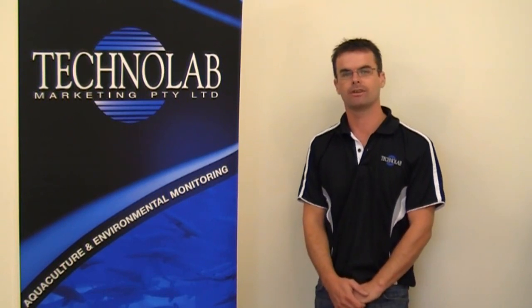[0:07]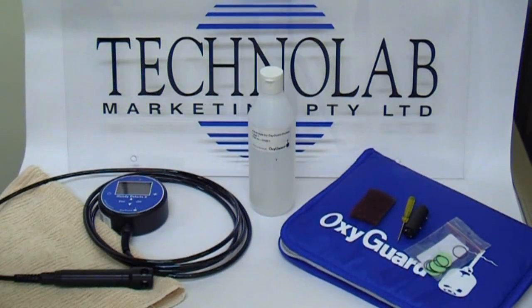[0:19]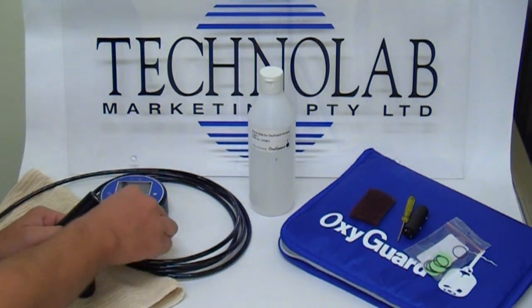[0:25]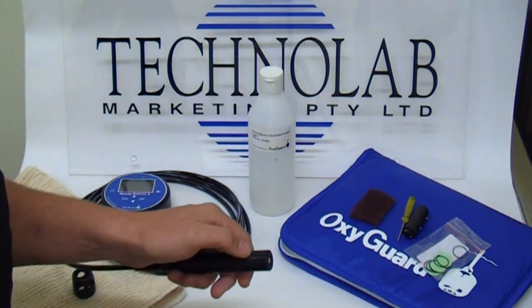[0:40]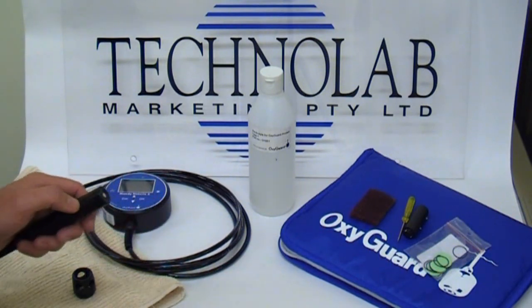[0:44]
Servicing a portable dissolved oxygen sensor. Basically, we change a membrane when the reading is fluctuating or taking time to stabilise, and/or giving the incorrect reading, or when the membrane is physically damaged. Other than that, there's really no routine maintenance that needs to be done on the probe, and the membrane isn't changed just for the sake of changing. So we only change them when they are giving an erroneous reading.
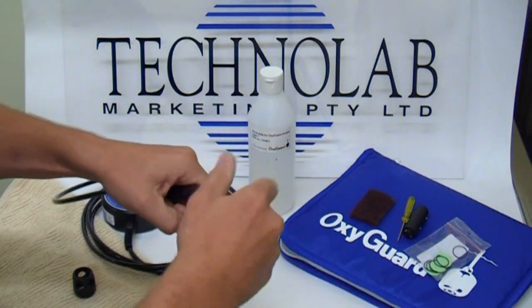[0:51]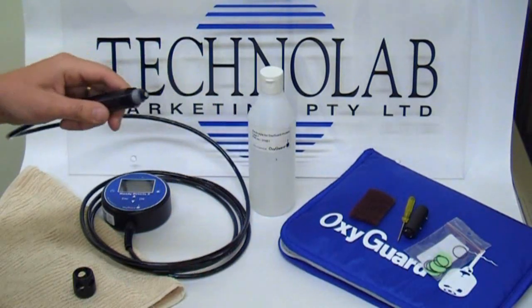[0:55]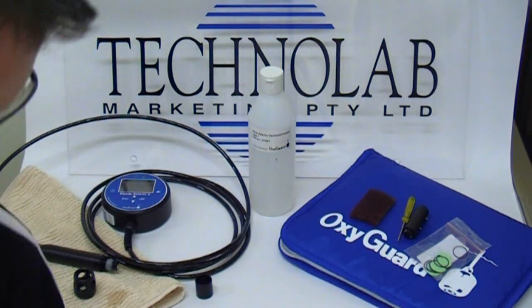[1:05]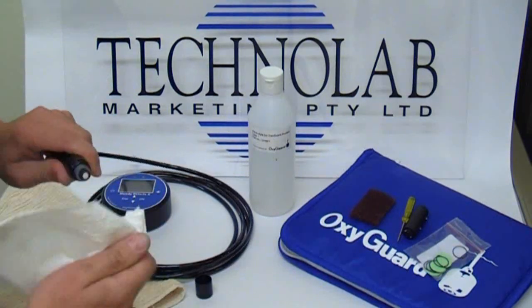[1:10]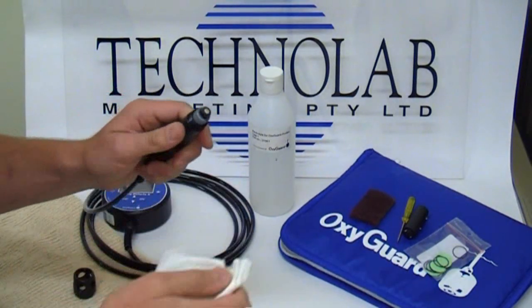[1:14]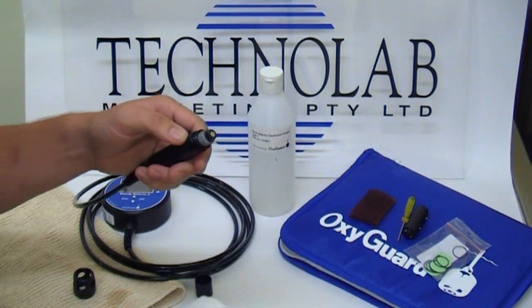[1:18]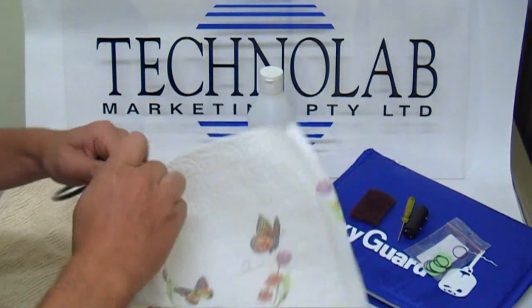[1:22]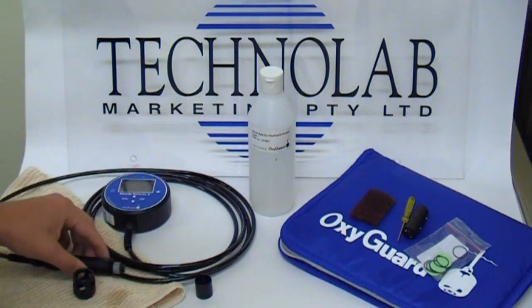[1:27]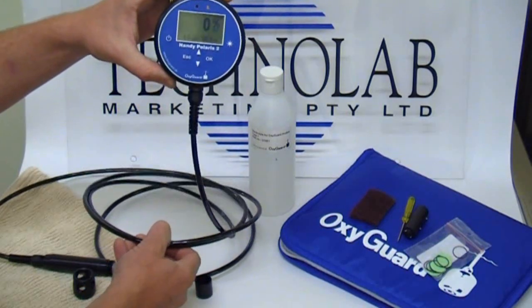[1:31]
To service a probe, remove the cap. There's a small amount of electrolyte inside. We'll just dispose of the electrolyte. The next important thing, and it is actually the most important aspect of this dissolved oxygen sensor: being a galvanic cell, it has an anode and a cathode on the end, and without any electrolyte there's no voltage output from the probe whatsoever. So the meter, when the probe is clean and dry, should be reading zero, basically zero output from the probe.
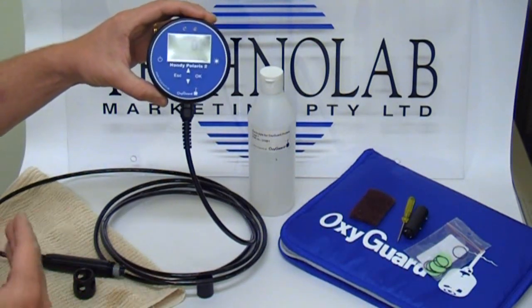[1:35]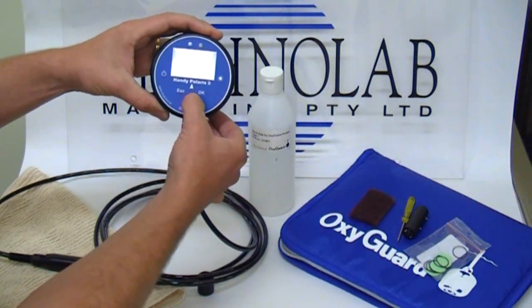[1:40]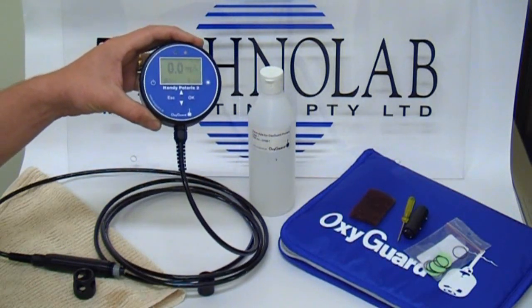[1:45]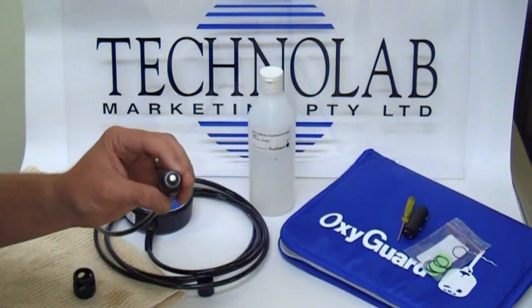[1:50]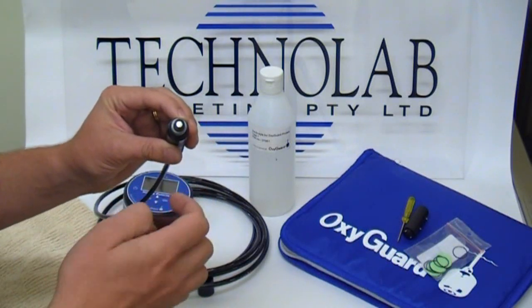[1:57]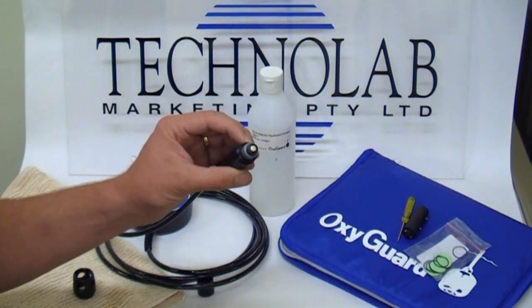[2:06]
If you're finding that there's a background reading of, say, 0.1 or 0.2 milligrams per litre, this probe should really read zero. So what we do is give the probe a bit of a clean. Over time, as oxygen molecules move through the membrane, they coat the anode and push the membrane further and further away from the actual anode. In doing so, it slows the response time of the probe down. It doesn't make it drift or give an erroneous reading. It just takes longer to stabilize.
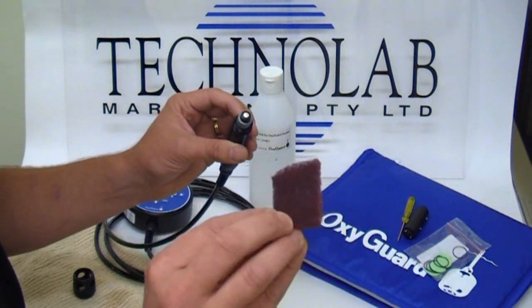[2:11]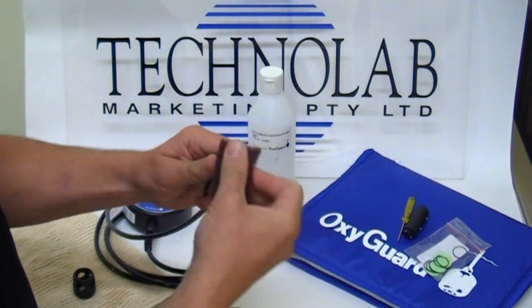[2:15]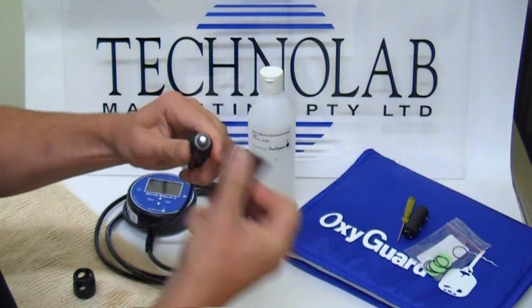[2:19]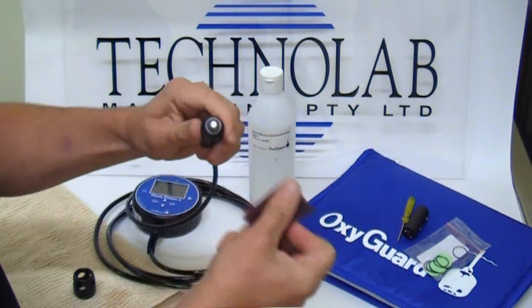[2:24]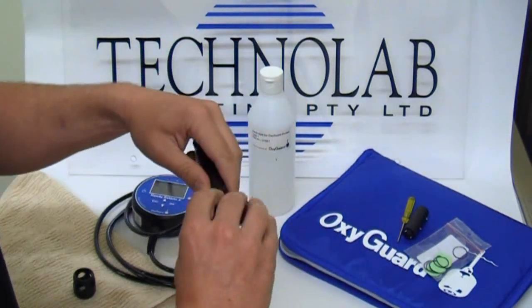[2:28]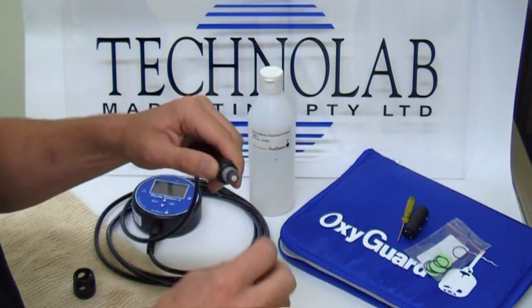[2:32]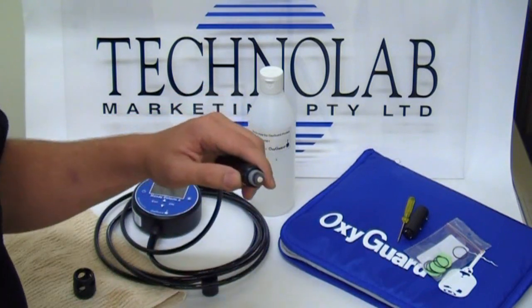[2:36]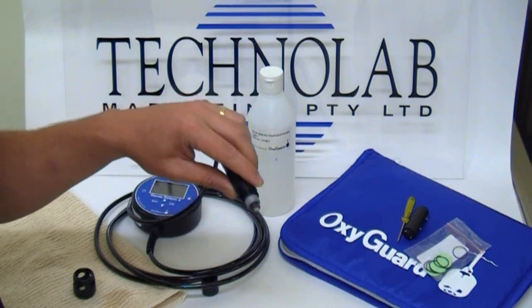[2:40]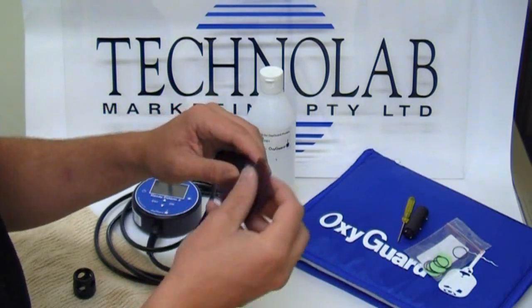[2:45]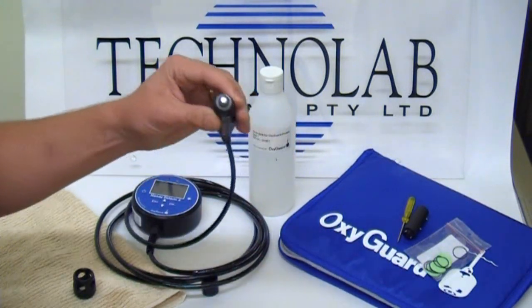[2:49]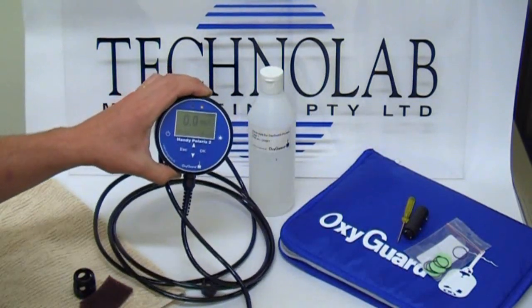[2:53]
So a scouring pad is the most important thing. It comes as part of our kit. It's important to give the end of the probe a scour, and I rotate the probe as I'm doing it so I don't leave score marks, really trying to make the cathode nice and bright. This can also be used to remove any white powdery deposits around the probe, which are the salts that dry out of the electrolyte. If it gets quite stubborn, you can dip the pad into a little bit of fresh water and give it a clean with a scouring brush. So the probe's nice and dry and clean and bright, the meter reads zero, and now we're ready to change the membrane.
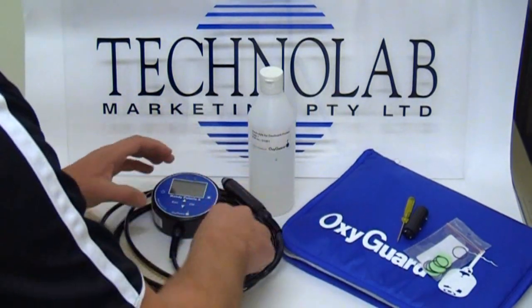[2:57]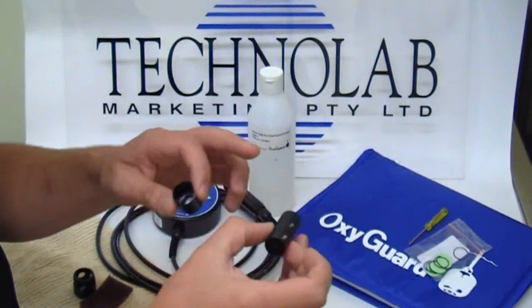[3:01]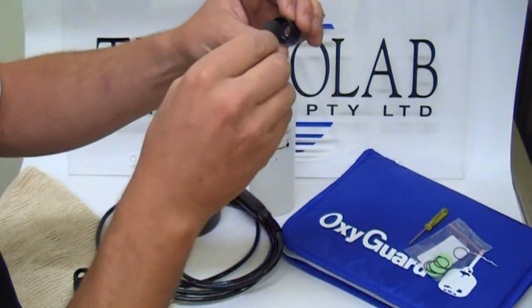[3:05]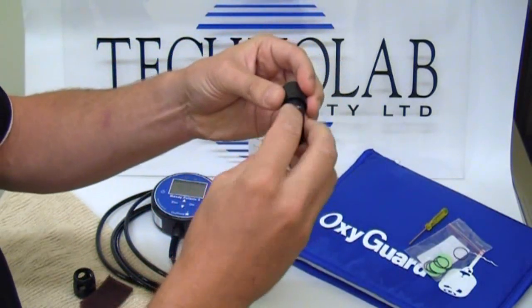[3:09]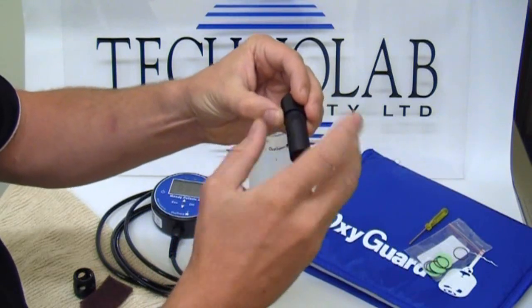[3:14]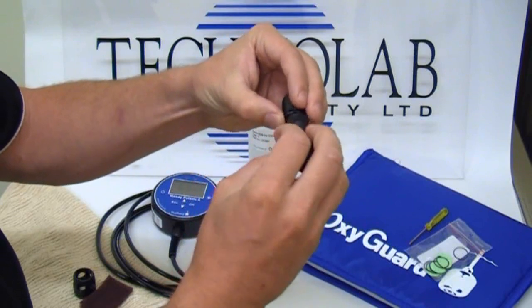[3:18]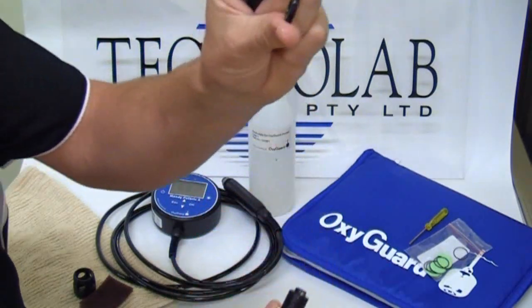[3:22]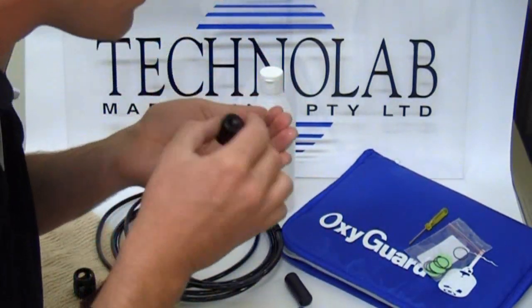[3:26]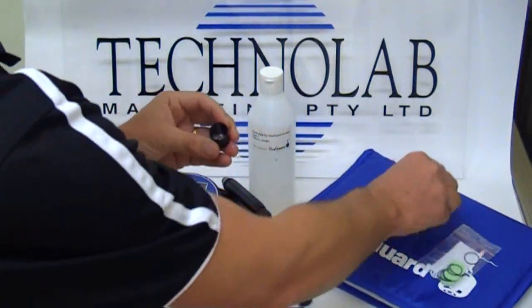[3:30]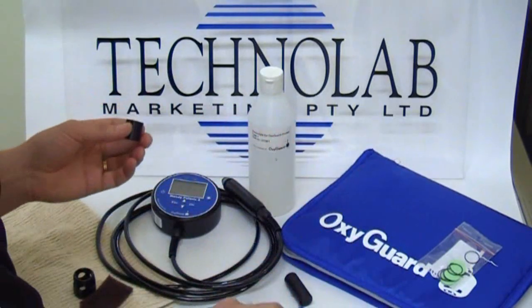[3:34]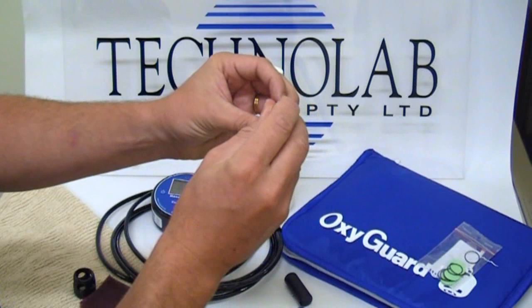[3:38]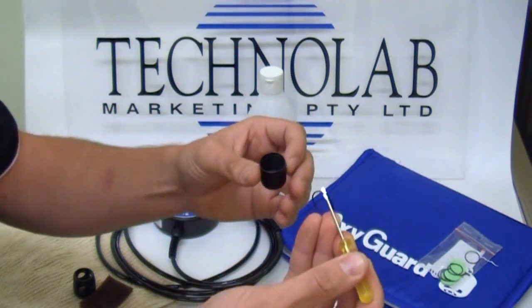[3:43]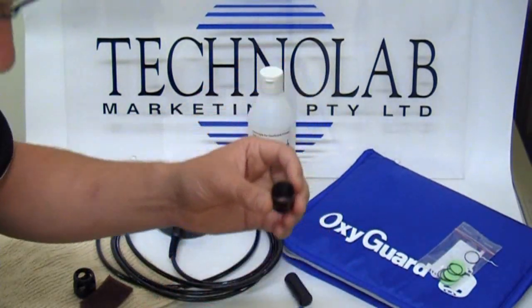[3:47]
To change a membrane, we have the universal tool, which not only opens the back of the meter, but also takes the template that is holding the membrane in place. It's a matter of rotating this quite a few times, about 30 times, to take the template out of the cap. I just gently blow, or a little screwdriver can pop out just the membrane alone. More importantly, there's an O-ring sitting down on the inside of this cap. Use something sharp, a fingernail, or just loosely grab it with a small screwdriver to remove the O-ring. The O-ring and the membrane should be changed at the same time.
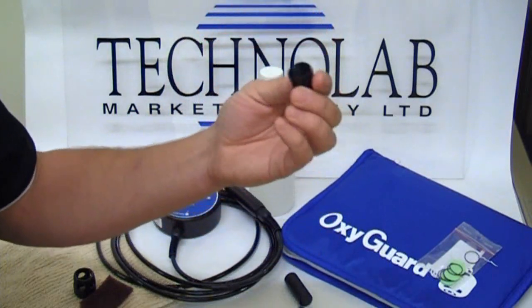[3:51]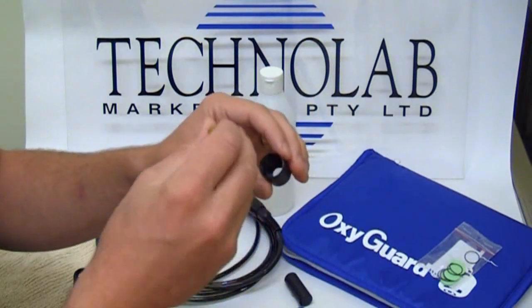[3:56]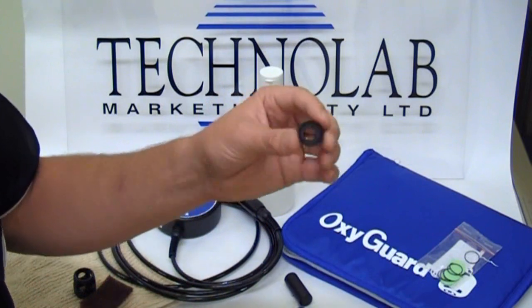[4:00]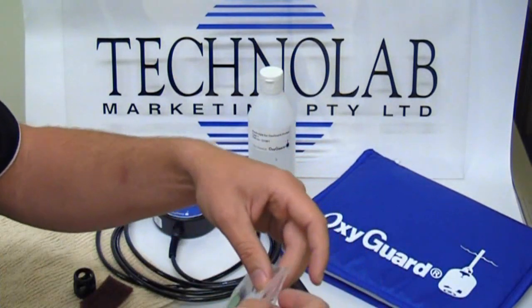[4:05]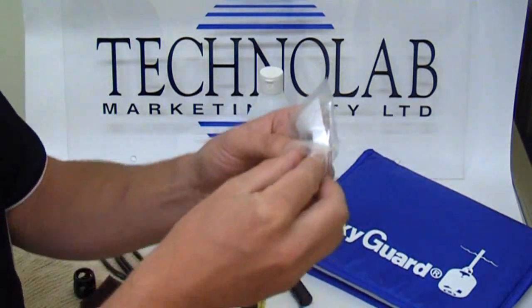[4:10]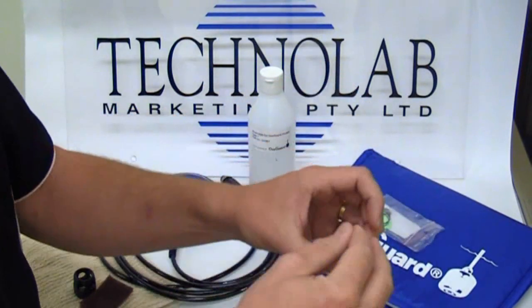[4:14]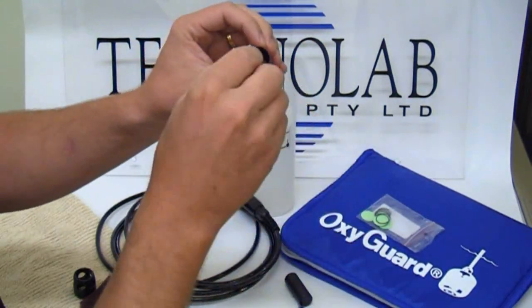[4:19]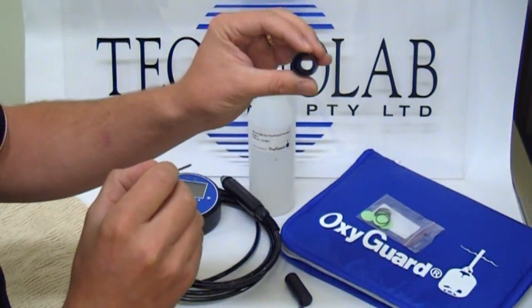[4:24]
The cap can then be rinsed, washed and cleaned, and any dried white powdery crystals can be dissolved away. To put the membrane in, we have a pack of 10 membranes and O-rings. First thing to do is grab an O-ring. O-ring always in first. The O-ring goes towards the bottom. Once again, it's handy having something to poke the O-ring into place at the bottom.
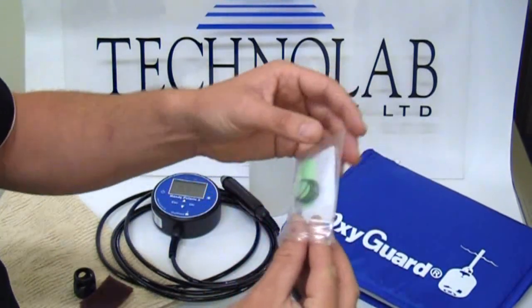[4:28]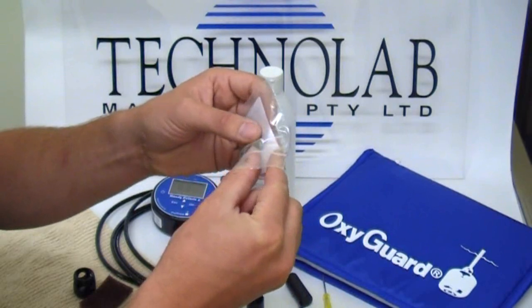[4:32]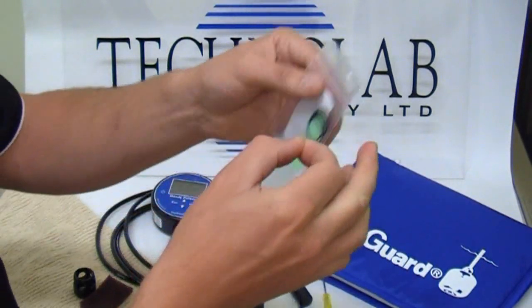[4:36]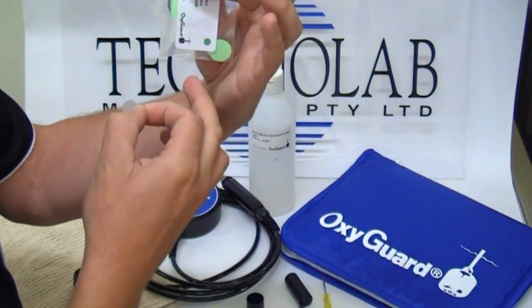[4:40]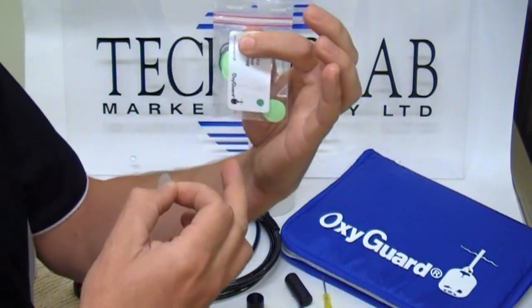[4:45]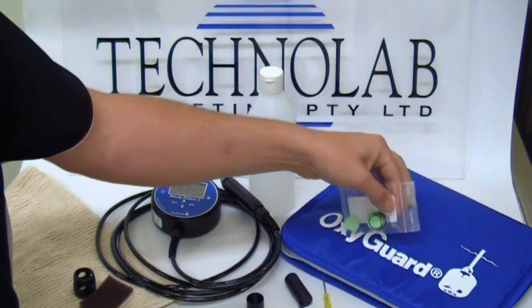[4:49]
The membrane can be handled, but I try not to grab it with glue. We want to keep it in good nick. OxyGuard use separators between the clear membranes. I have had a few meters back with a green membrane and wondering why it doesn't work. They're actually a paper separator between the membranes, so they don't work too well.
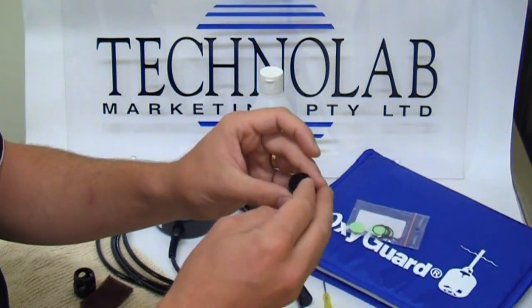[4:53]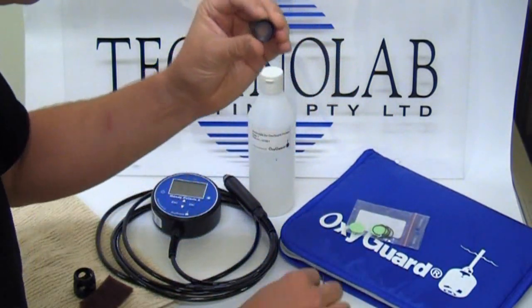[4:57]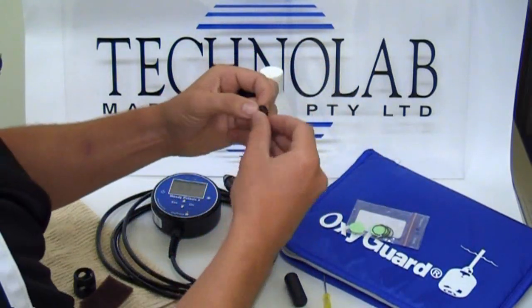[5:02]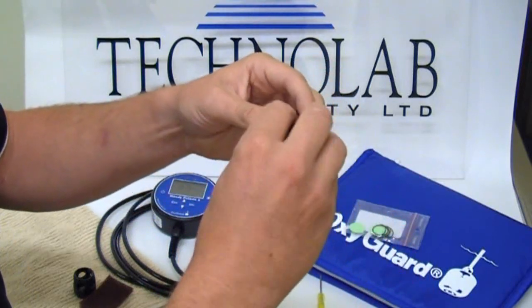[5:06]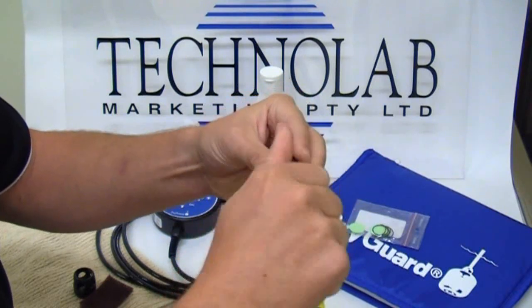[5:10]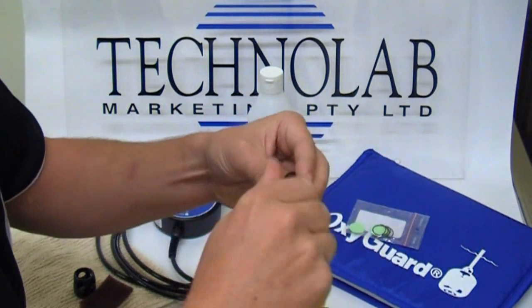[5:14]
We drop the membrane roughly into place. The most important thing is you don't have to worry too much about where it's placed, just as long as it's down towards the bottom. We take the template, I normally put it onto the key. Don't worry about where the membrane's placed, and we screw about 2/3 of the way down. So it's a fair way down.
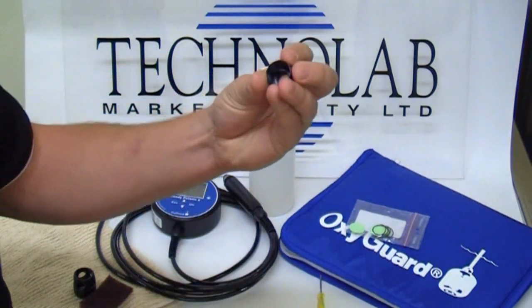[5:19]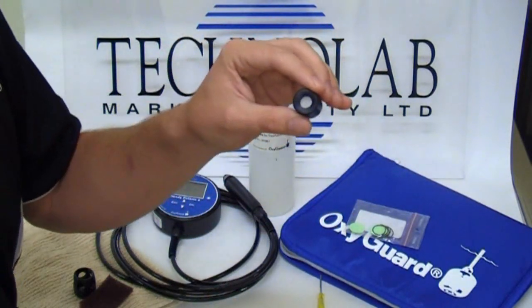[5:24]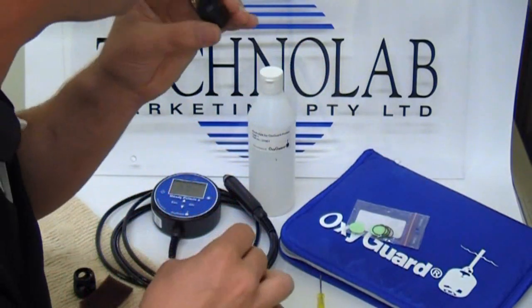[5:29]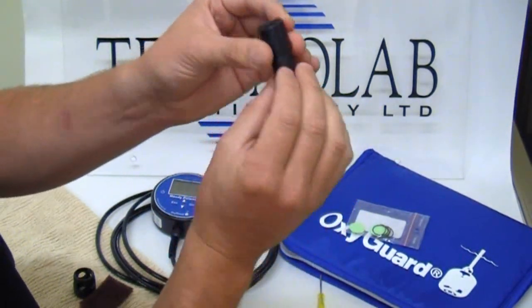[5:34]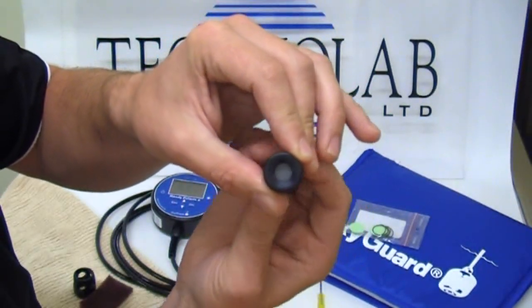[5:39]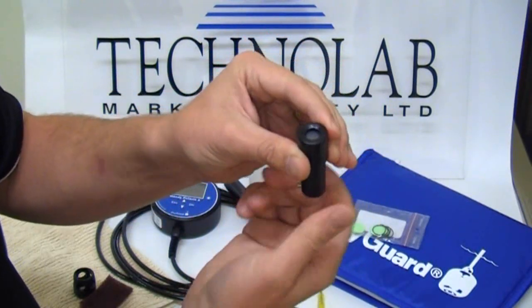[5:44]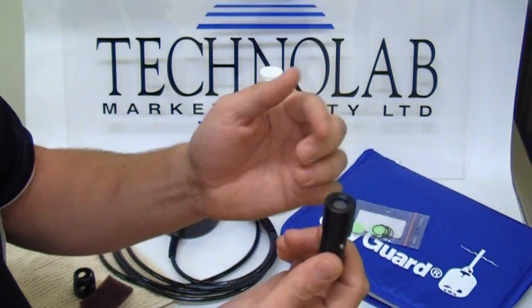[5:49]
Once it gets almost down to the bottom, we rotate the cap over, and this is the trick. We gently blow the membrane down onto the plate. In doing so, if you put the key back in and you start rotating, the membrane should actually be rotating on top of the template. What this is doing is self-centering the membrane. So now we just screw the template up till it feels home. And because the membrane is self-centered, it basically fits perfectly because they're machine cut.
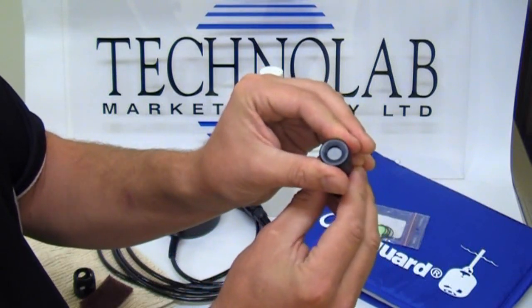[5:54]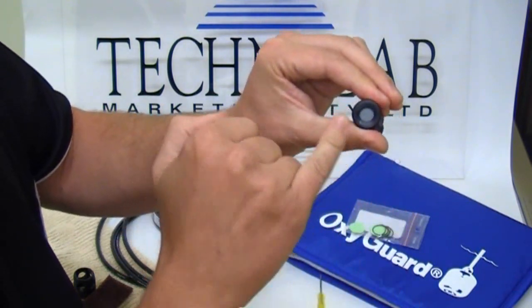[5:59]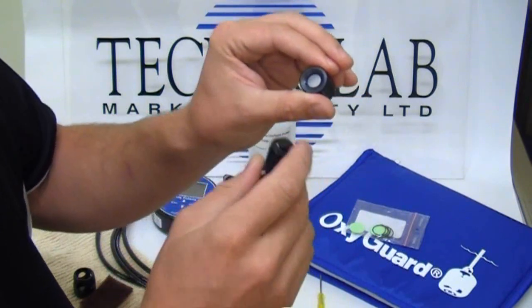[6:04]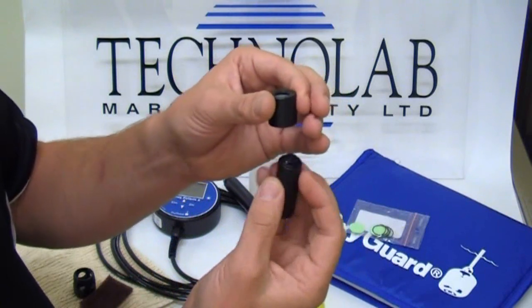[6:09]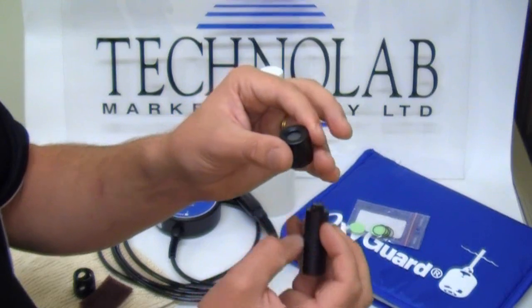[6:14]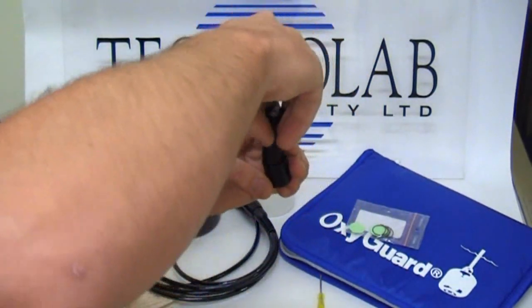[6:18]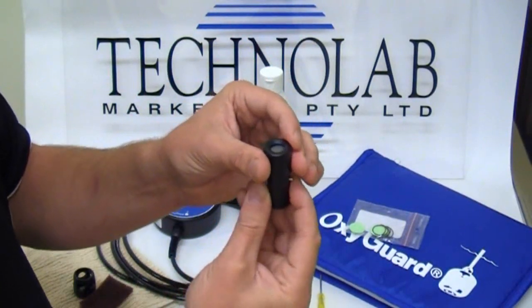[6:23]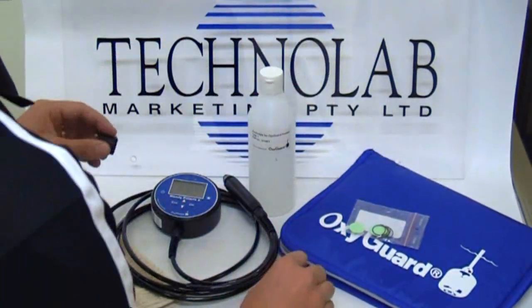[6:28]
Then you can put a fair bit of tension onto the cap, not overly tight, because we want a nice flat membrane, which this one is, and we don't want any wrinkles in it. The wrinkles are caused by the O-ring not being quite in the right place, or you haven't centered that membrane correctly. The problem is a lot of the time, trying to get the membrane towards the bottom and screwing down, you don't know where that membrane's sitting. So the best trick is to invert the membrane and screw up and watch the membrane rotate up to the top. And you get a nice clean membrane.
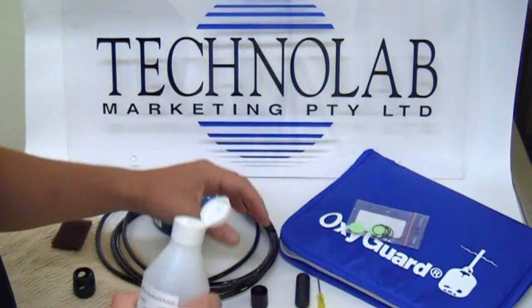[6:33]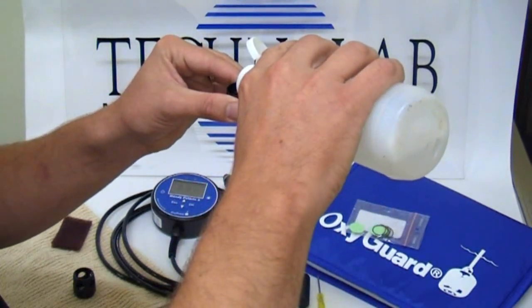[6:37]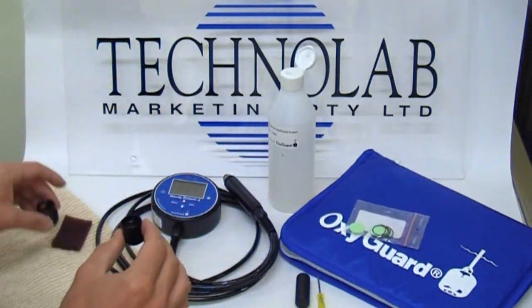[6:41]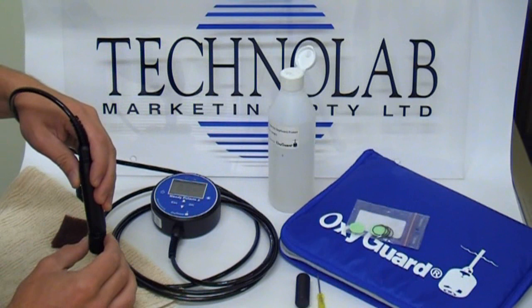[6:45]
The next step is some electrolyte. I generally fill this up 2/3 to 3/4 full. It's a little bit over full. Take the probe and a few turns. Flick the side of the meter just to get the air bubbles out. It does breathe quite easily and it will drip out the excess electrolyte, and you can screw that quite firm.
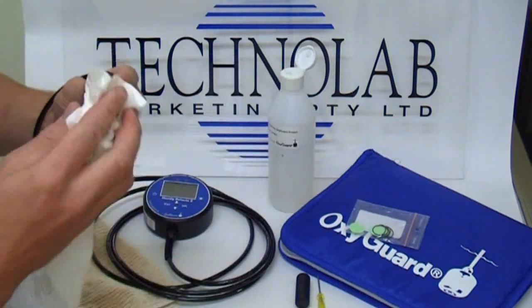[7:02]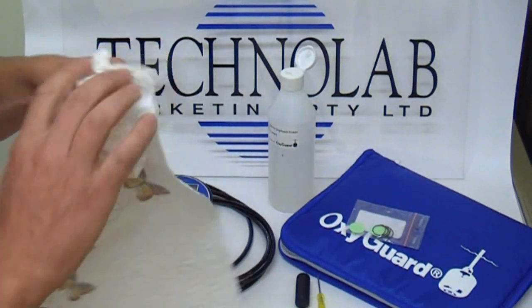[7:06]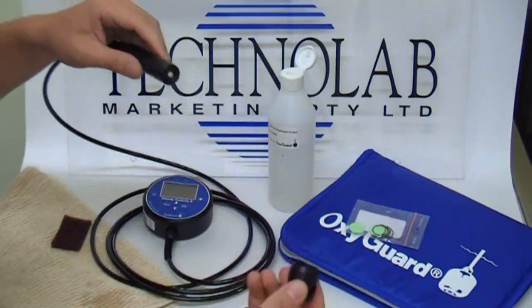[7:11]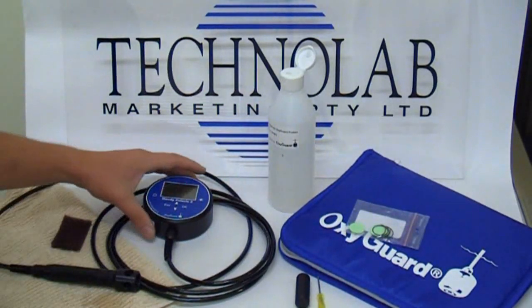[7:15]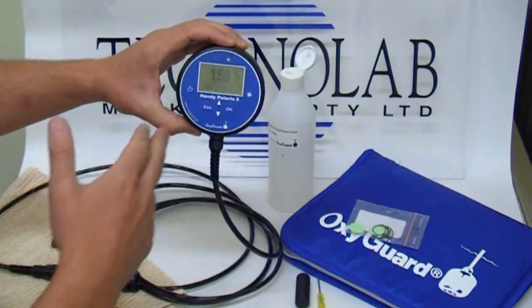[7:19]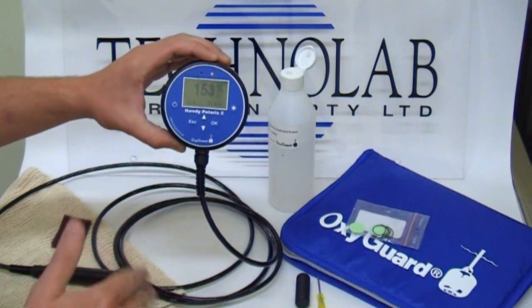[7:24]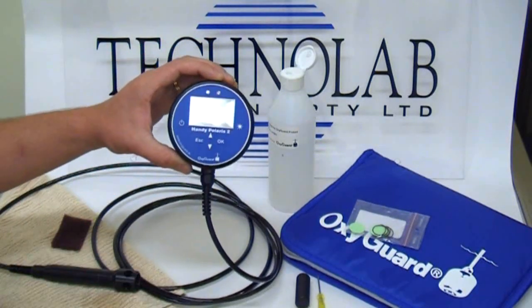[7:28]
The membrane is actually quite robust. We can dry the membrane and make sure that the probes are nice and tight. Membrane cap protector, and that's done. What you will notice is when you do change the membrane, the actual percent saturation, rather than being 100% with the membrane back on, spikes quite sharply. It may go up to 200, 250%.
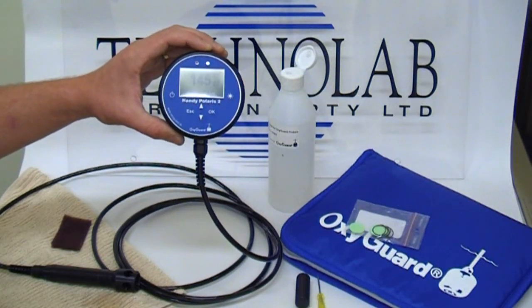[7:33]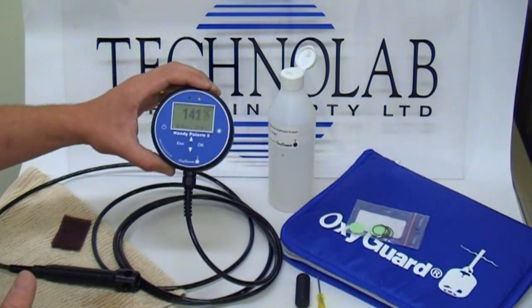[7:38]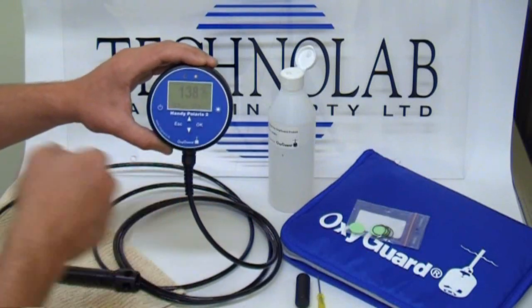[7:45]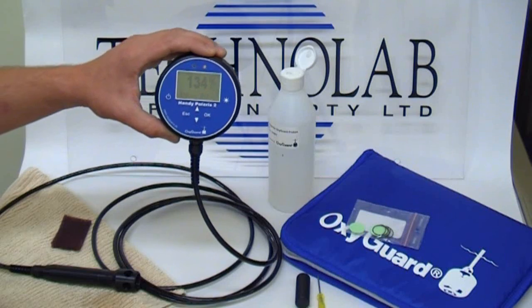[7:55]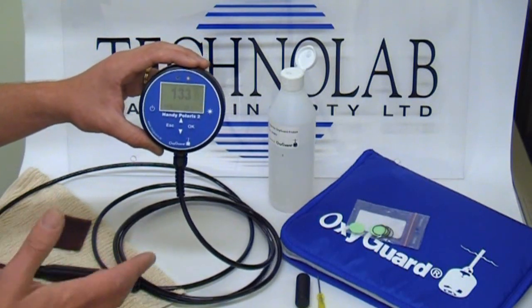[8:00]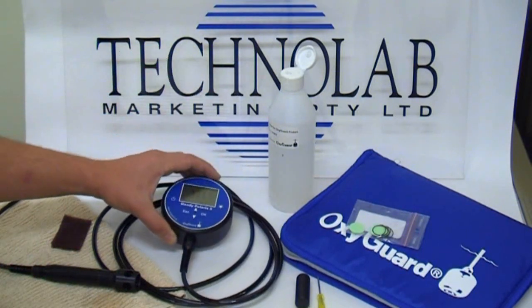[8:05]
What needs to happen now is we need to wait generally 10 minutes for the probe to equilibrate. Basically that means the probe comes to temperature with the electrolyte and there's balance. And you'll find the percent saturation is not varying at all. You'll see this slowly drifting down at the moment. Most importantly, the temperature is very stable, and it will just adapt to equilibrate with the air temperature and the electrolyte temperature. So now it's just a matter of waiting. We can't use the meter for this period because we haven't calibrated and it is settling out. So we'll come back to that in a moment and do a calibrate.
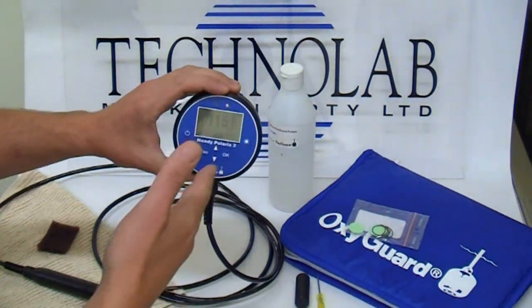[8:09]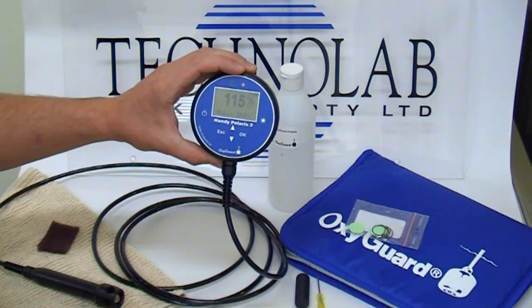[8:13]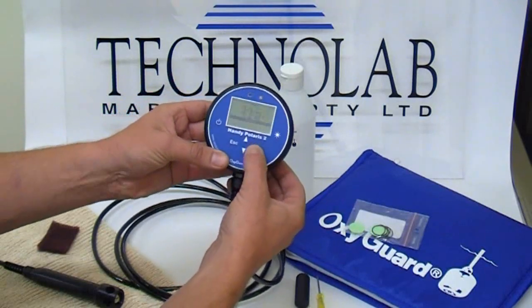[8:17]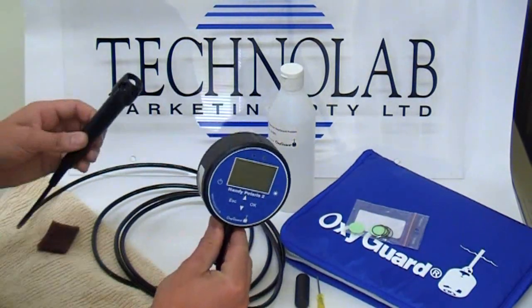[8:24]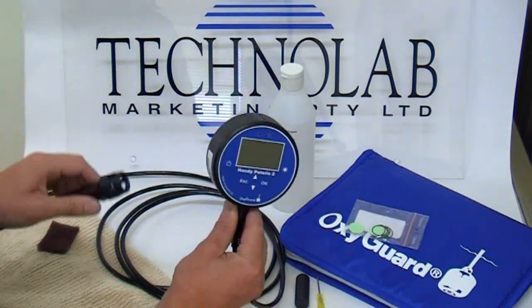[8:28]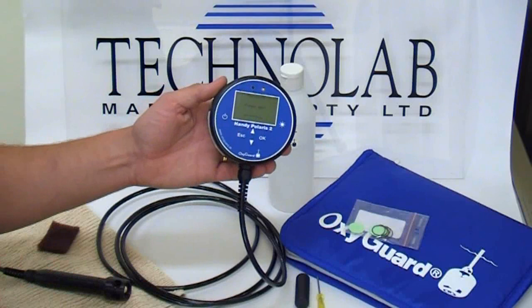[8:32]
Here we are about 10 minutes later. You notice that the meter's settled itself out at 115%. So to do a calibrate now, we simply go into the menu to calibrate, press OK. OxyGuard sensors are calibrated in air without any saturated air, just straight in air, and it assumes that our air is 100% saturated with oxygen and takes that as the 100%.
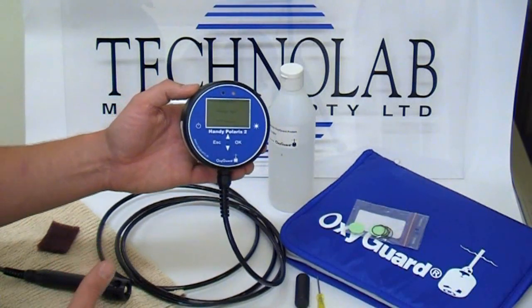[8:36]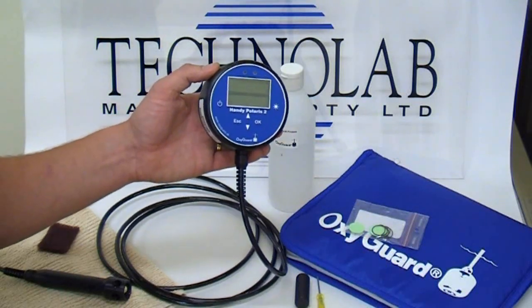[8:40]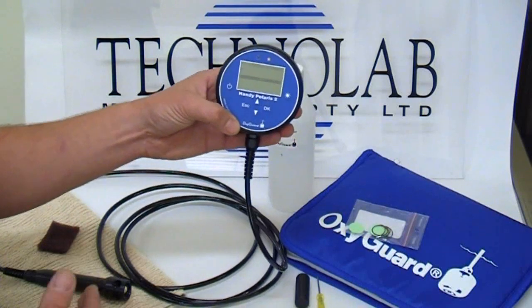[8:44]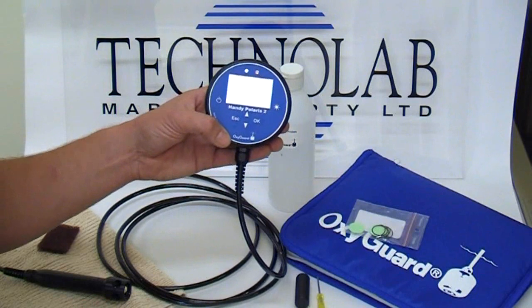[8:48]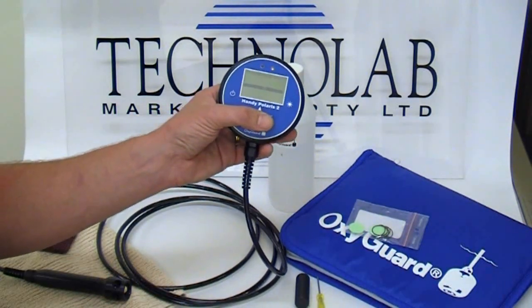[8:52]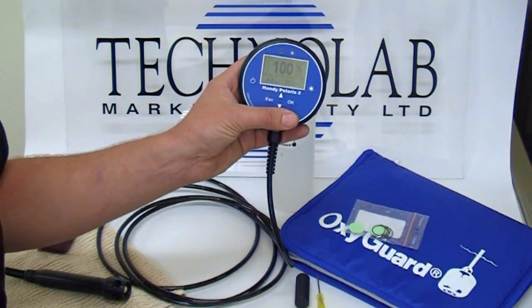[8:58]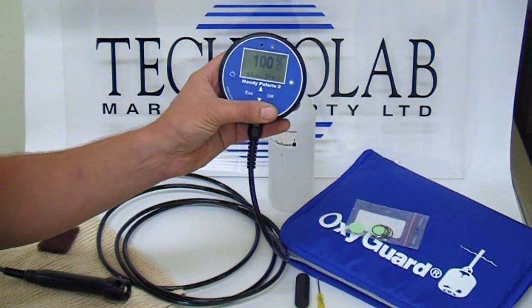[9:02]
And being a galvanic cell, without any electrolyte present, it doesn't give any output, it uses that reference as a true zero. So it's one of the very rare DO meters on the market that uses a true zero as its zero point and 100% saturation as its top measuring point. And in doing so, we get a linear calibration to 100%, and that meter is ready to use.